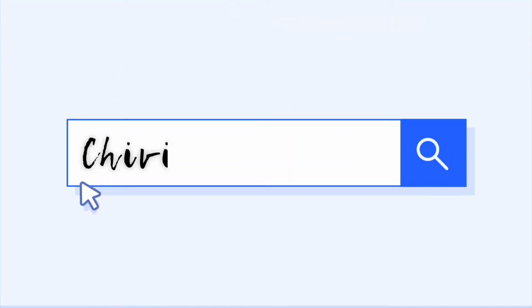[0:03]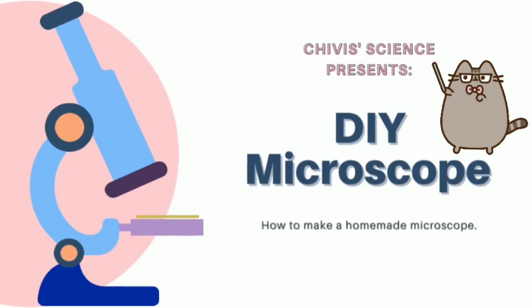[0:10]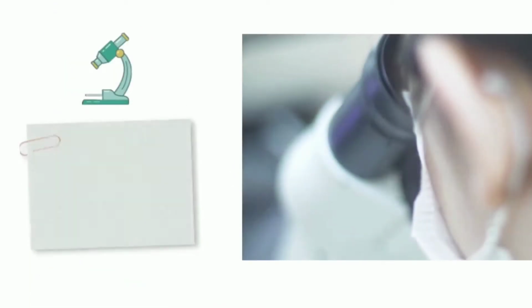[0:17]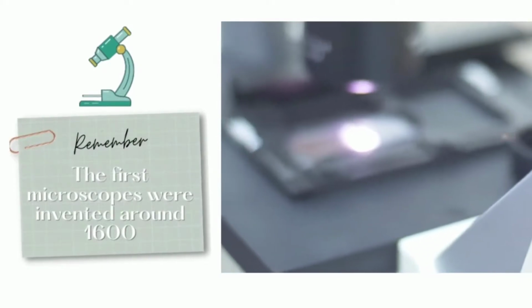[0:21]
Hello everyone! Today we will learn how to make a homemade microscope. Remember that a microscope is a very useful instrument to see tiny things.
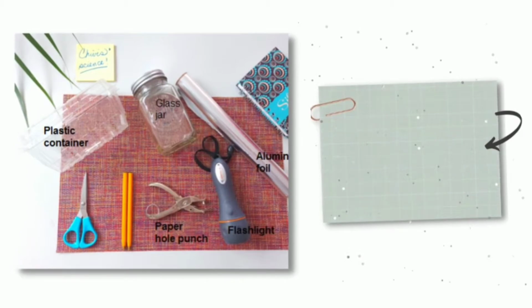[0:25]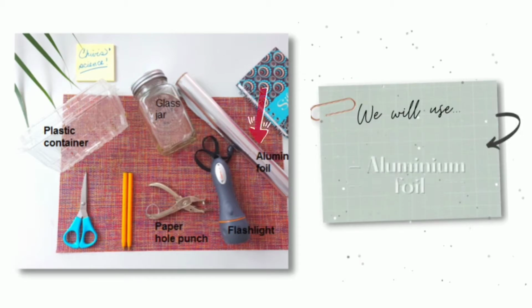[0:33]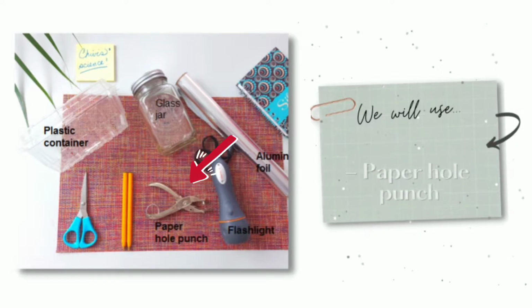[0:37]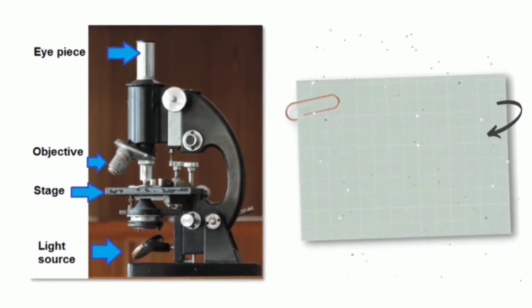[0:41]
So, for today's activity, we will need the following material: a plastic container, a glass jar, an aluminium foil, a flashlight, and a paper hole punch. With all these materials, we are going to make the main parts of a microscope.
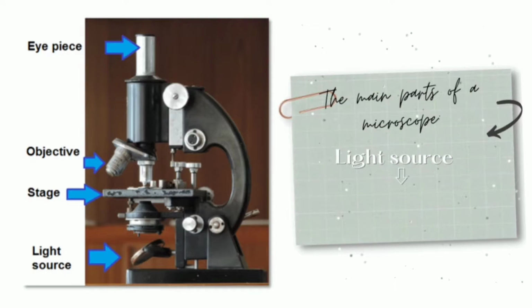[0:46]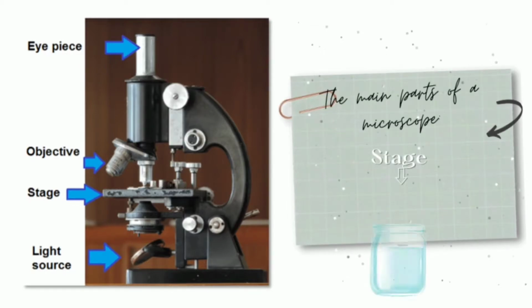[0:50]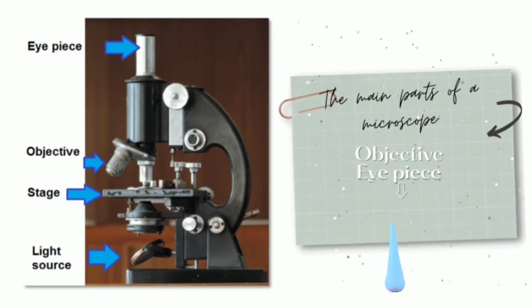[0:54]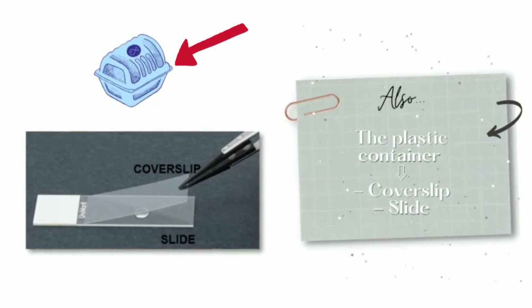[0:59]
As a light source, we will use a flashlight. As a stage, we will use a glass jar. And as the objective and the eyepiece, a drop of water. Also, with the plastic container, we will make the cover slip and the slide.
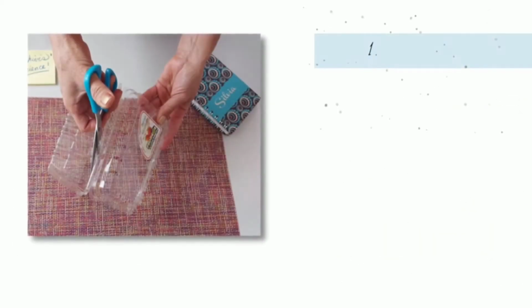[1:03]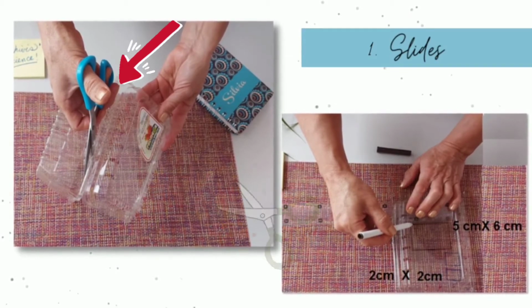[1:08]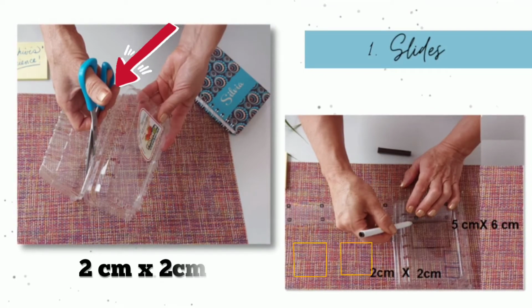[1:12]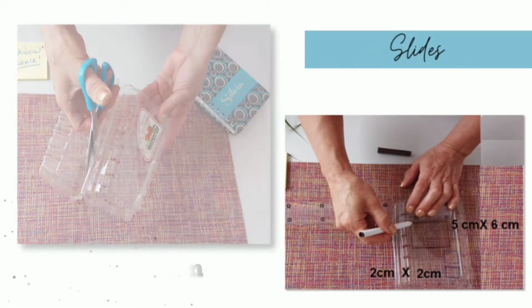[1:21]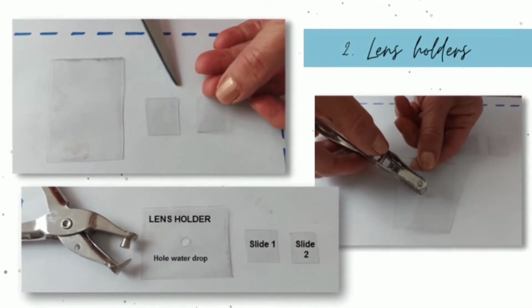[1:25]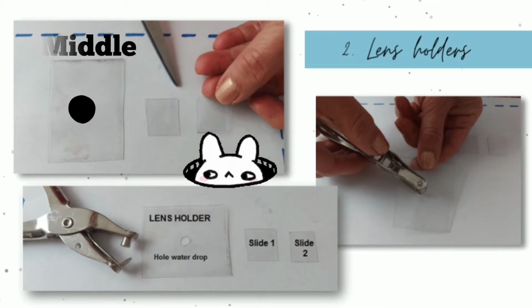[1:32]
So, we are going to take some scissors and carefully, we will cut two small squares of 2 centimeters by 2 centimeters in size. And we are going to cut a larger one of 5 centimeters by 6 centimeters. Now we have to cut out the lens holder with the paper hole punch right in the middle of the plastic to do a beautiful hole in the center.
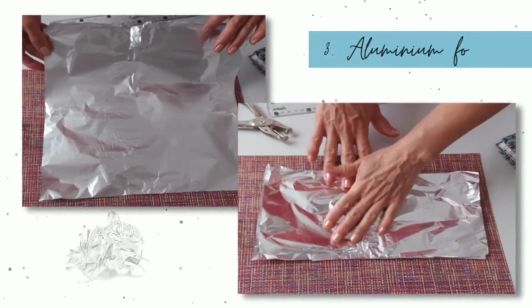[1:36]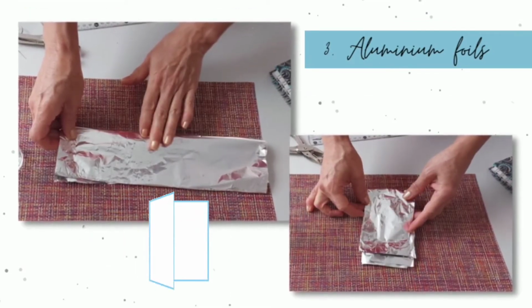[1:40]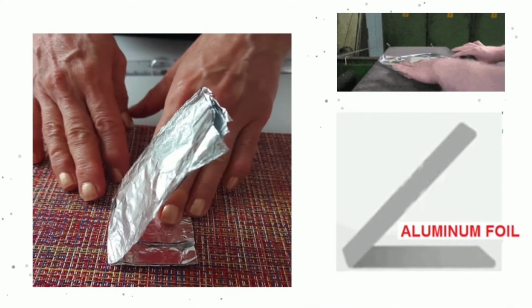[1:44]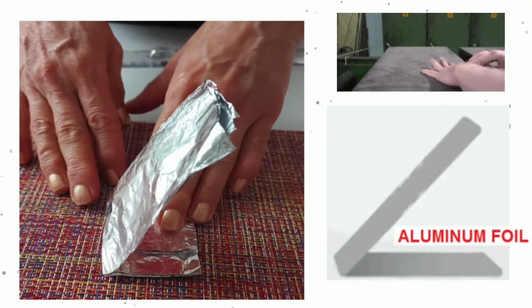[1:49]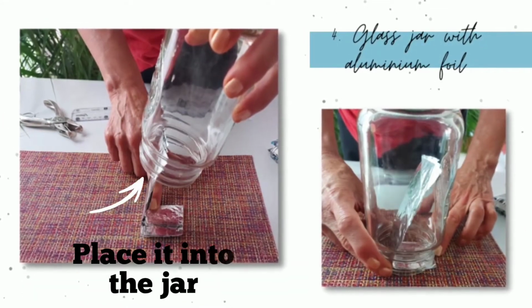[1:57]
Okay, to continue, take some aluminium foil and then you are going to fold it in a rectangular shape as you can see here. Now, when you have folded it enough to be sturdy, make with it a similar structure as you can see here. Okay, the next step is to place it into the jar.
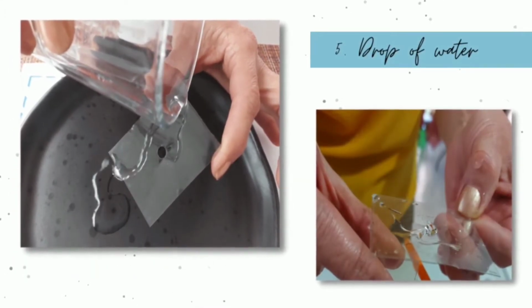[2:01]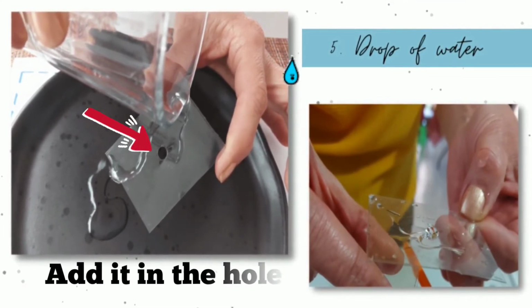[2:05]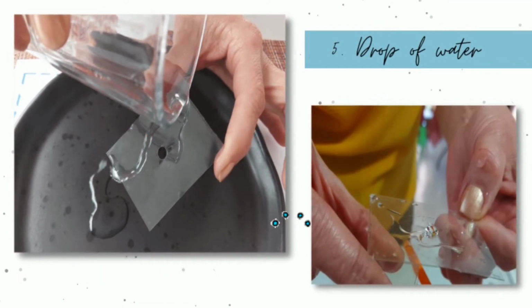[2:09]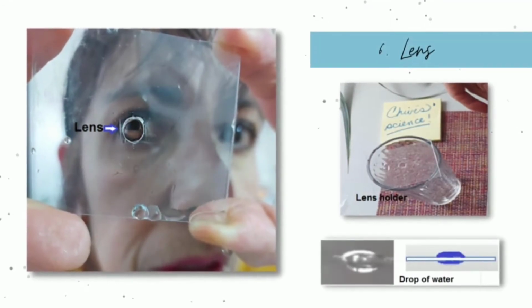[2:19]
After that, you will add some water in the hole of the lens holder. Your drop of water has to have a spheric form. This is the secret to make your microscope work very well. In this step, you have to make sure that the drop of water works.
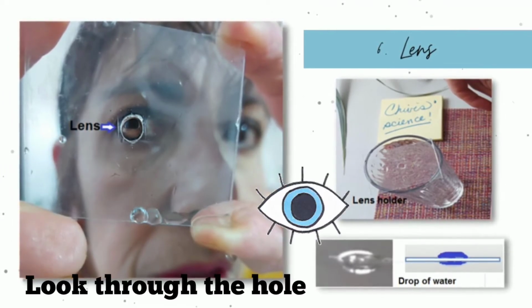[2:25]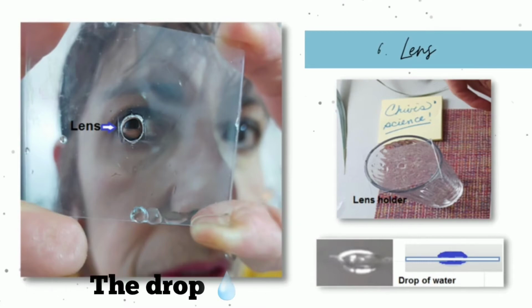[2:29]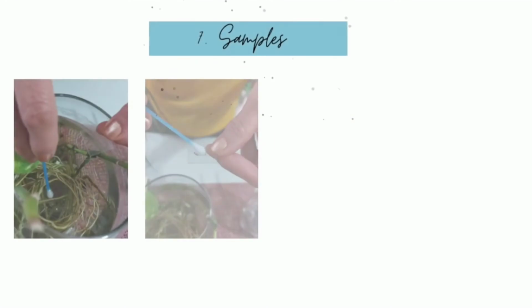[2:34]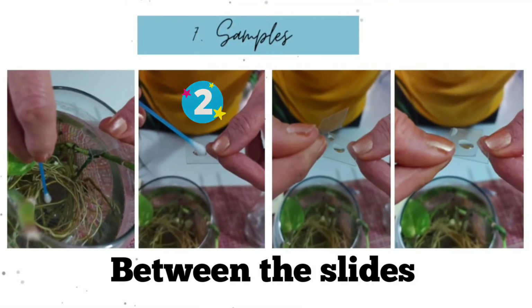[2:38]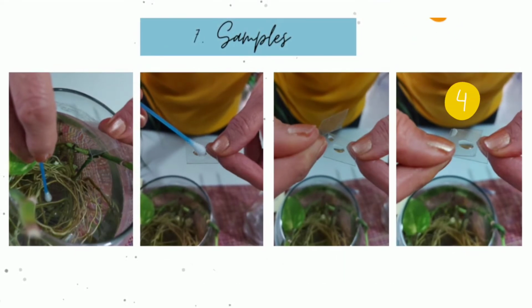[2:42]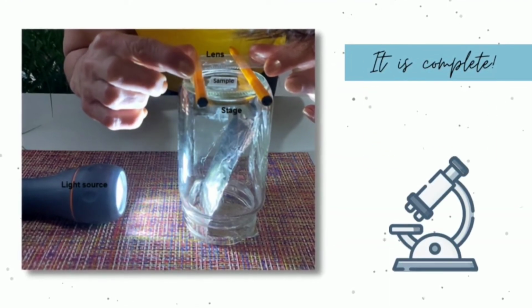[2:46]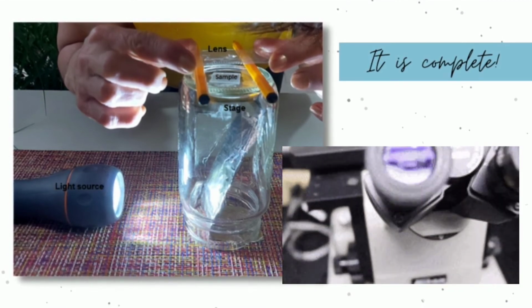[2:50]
As you can see here, you have to look through the hole, and while you do this, the drop of water mustn't fall. In this part of the experiment, you need to place the sample in between the cover slip and the slide, as if you were doing a little sandwich. Finally, it is complete. You have all the main parts that microscopes need to work correctly.
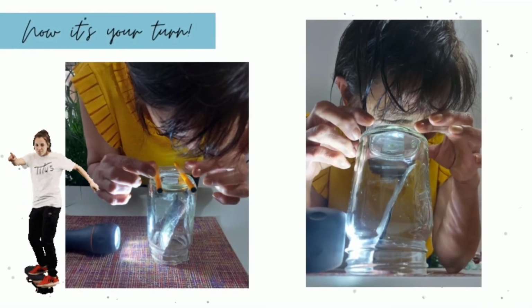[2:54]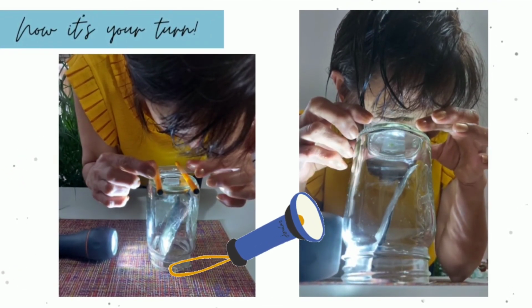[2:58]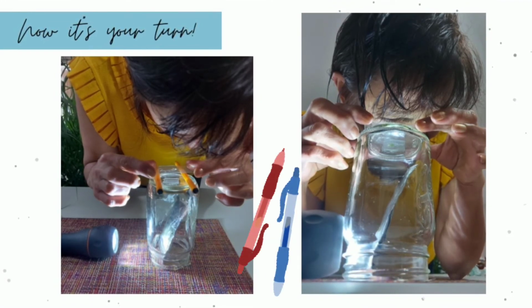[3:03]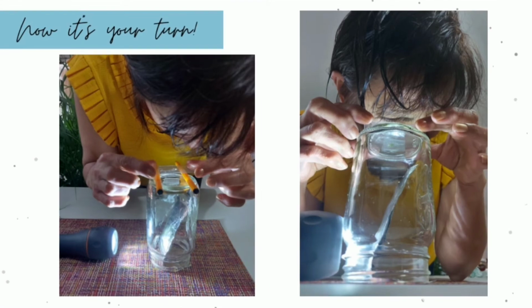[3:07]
Now is your turn. Turn on the flashlight, and if you want, you can put 2 pens under the sample to support the lens holder. The pens help you to give a good height over the sample to get the best focus.
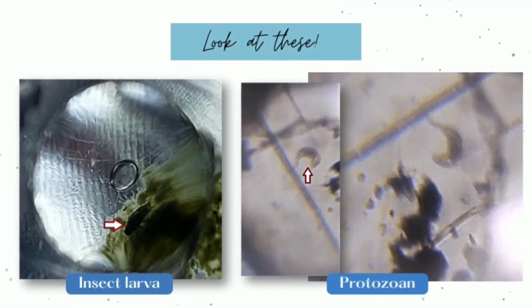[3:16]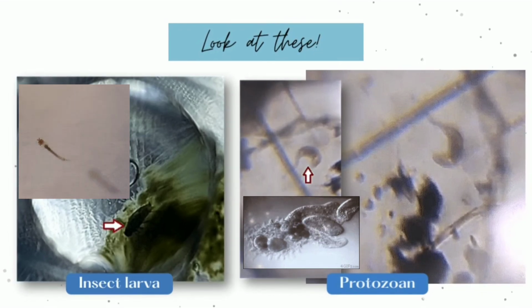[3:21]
And look at these! These are my examples. I found some interesting things in the water.